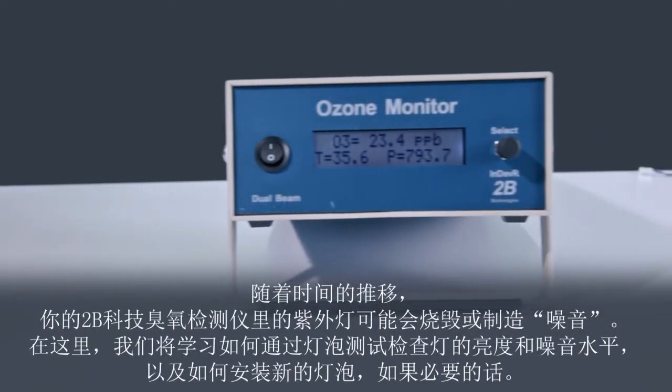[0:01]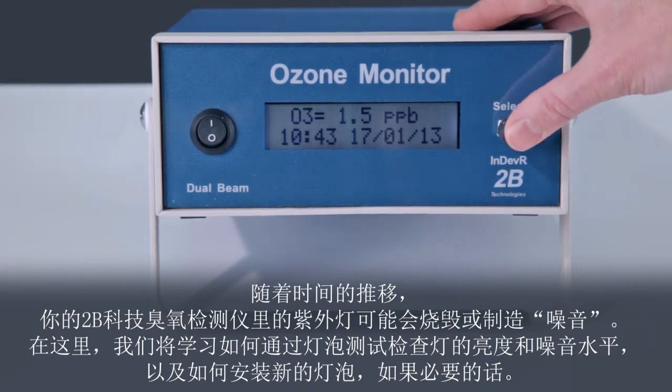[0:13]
Over time, the UV lamp in your 2BTEC ozone monitor may either burn out or become noisy. Here, we will learn how to run the lamp test to check the lamp intensity and noise level, and how to install a new lamp if necessary.
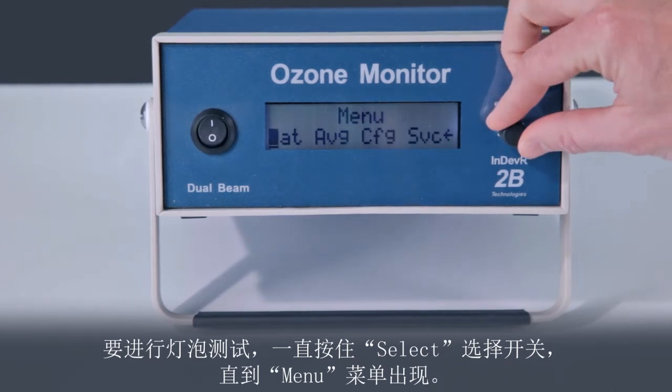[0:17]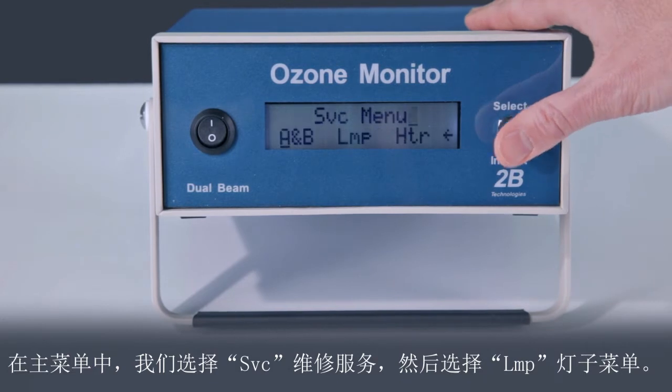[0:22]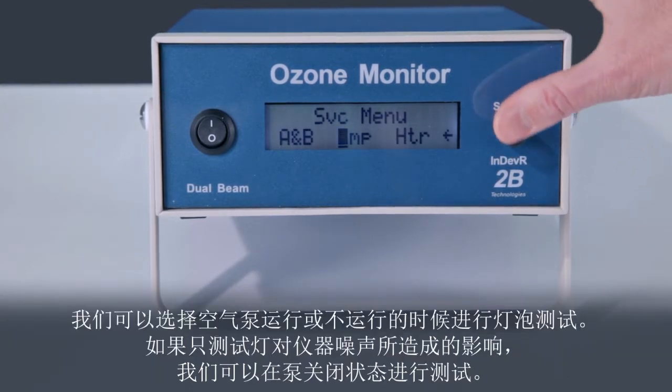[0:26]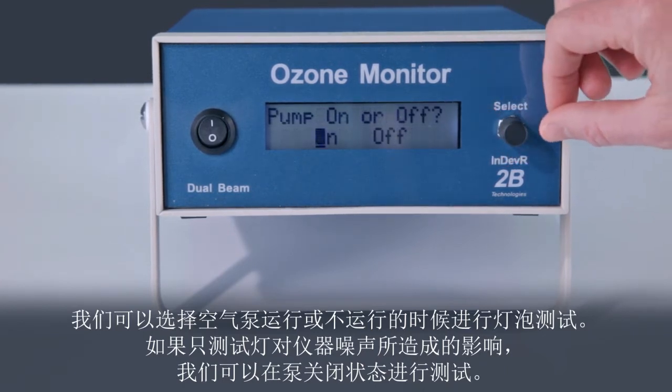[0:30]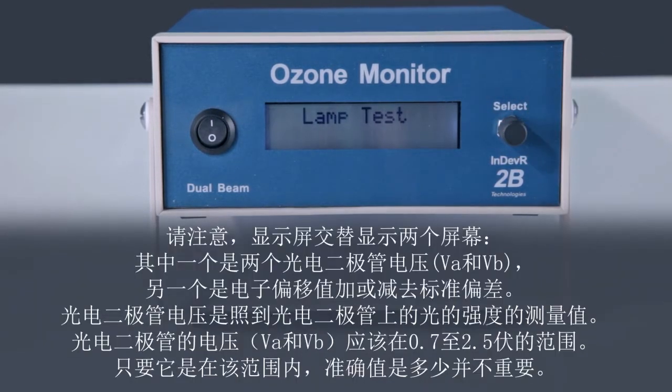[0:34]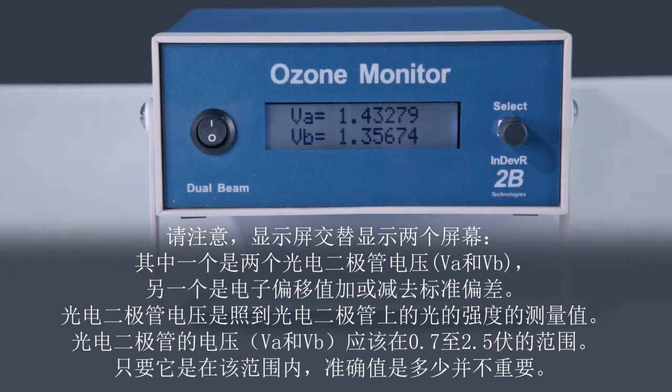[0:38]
To run the lamp test, hold the select switch until the menu appears. In the main menu, we first select the service, then the lamp submenu. We can run the lamp test with or without the air pump running. To test only the effect of the lamp on the instrument noise, we will run the test with the pump powered off. Notice that the display alternates between two screens, one showing the two photodiode voltages and another showing the electronic offset plus or minus the lamp standard deviation.
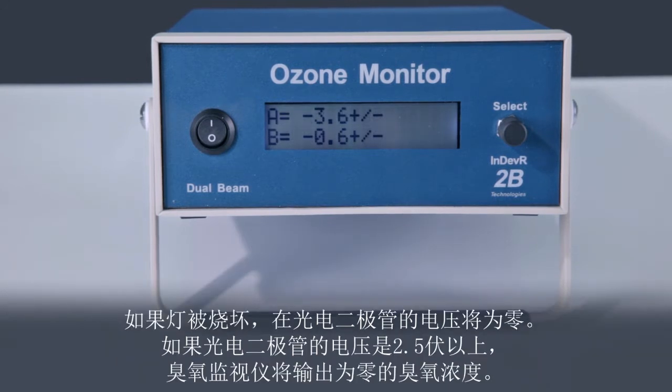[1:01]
The photodiode voltages are a measure of the light intensity striking the photodiodes. The photodiode voltages, V sub A and V sub B, should be in the range of 0.7 to 2.5 volts. The exact values are unimportant, as long as they are in this range. If the lamp is burned out, the photodiode voltages will be zero. If the photodiode voltages are above 2.5 volts, the ozone monitor will output zero for the ozone concentration.
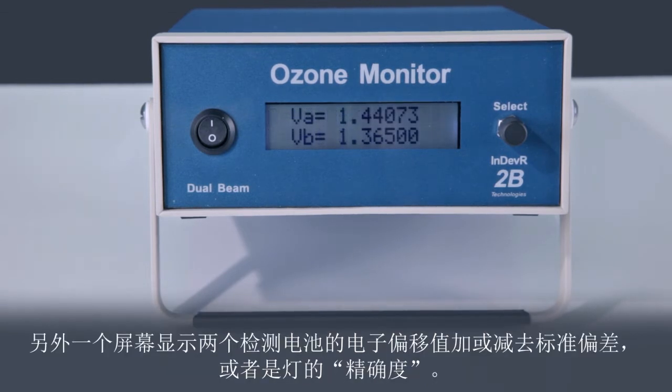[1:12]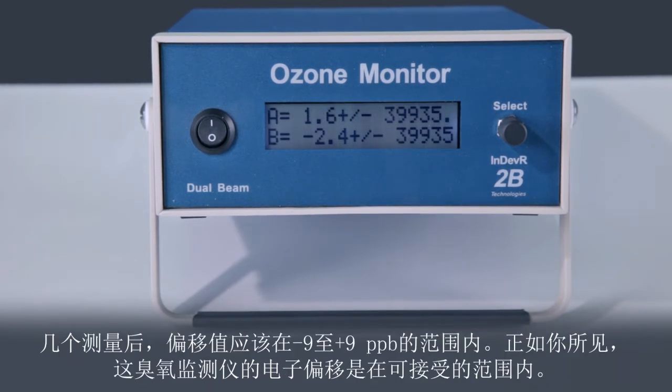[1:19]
The other screen shows the electronic offsets of the two detection cells plus or minus the standard deviations or precisions of the lamp. After a few measurements, the offsets should be in the range of negative 9 to plus 9 ppb. As you can see, the electronic offsets for this ozone monitor are well within the acceptable range.
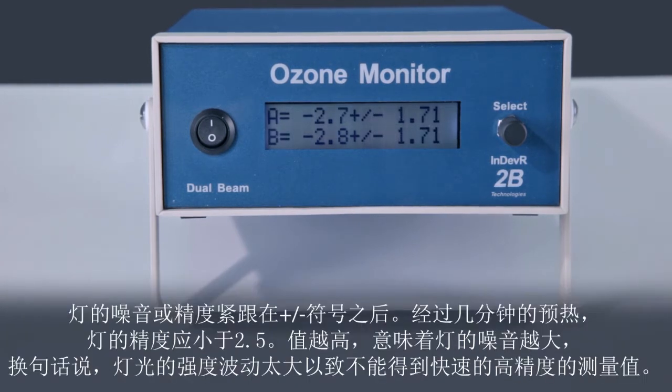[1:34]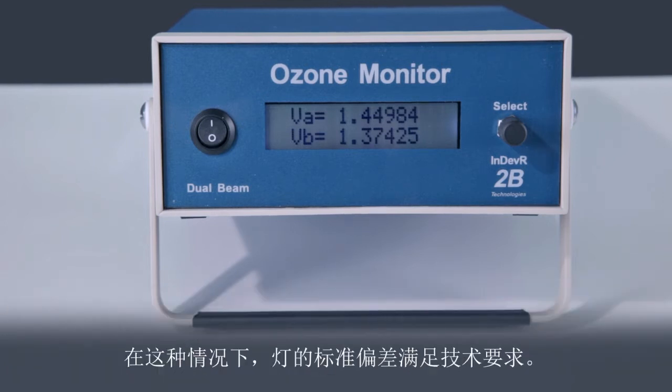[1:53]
The noise or precision of the lamp follows the plus/minus symbols. After a few minutes of warm-up, the lamp precisions should be less than 2.5. A higher value implies a noisy lamp. In other words, the intensity of the lamp is fluctuating too much to make fast measurements with high precision. In this case, the lamp standard deviations meet specification.
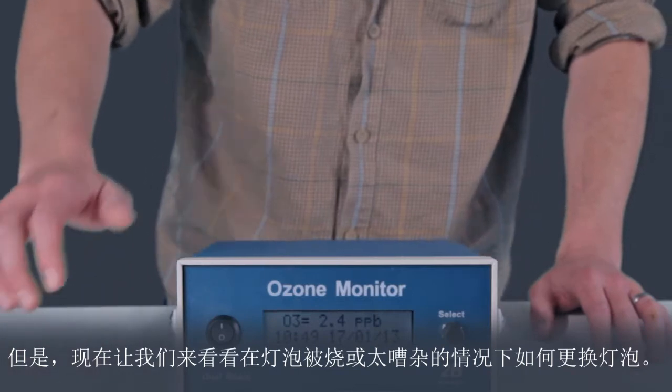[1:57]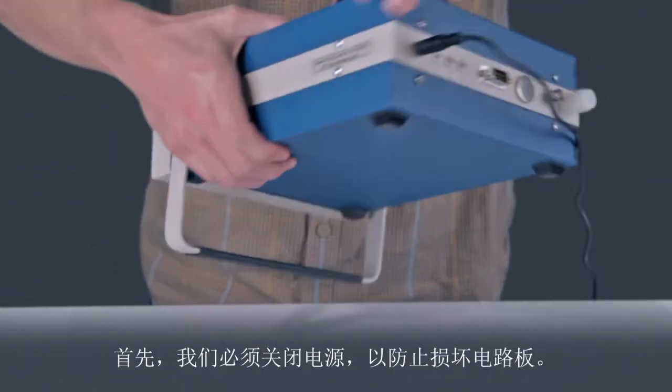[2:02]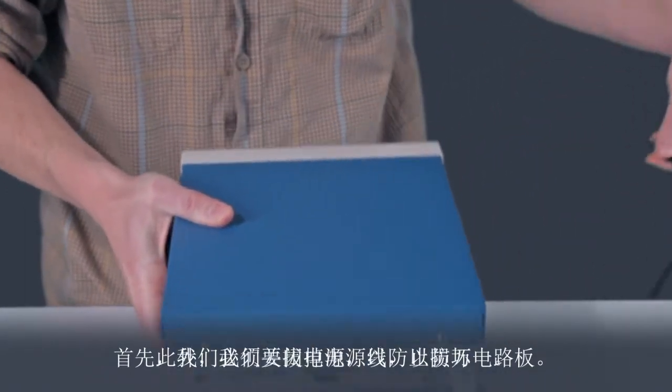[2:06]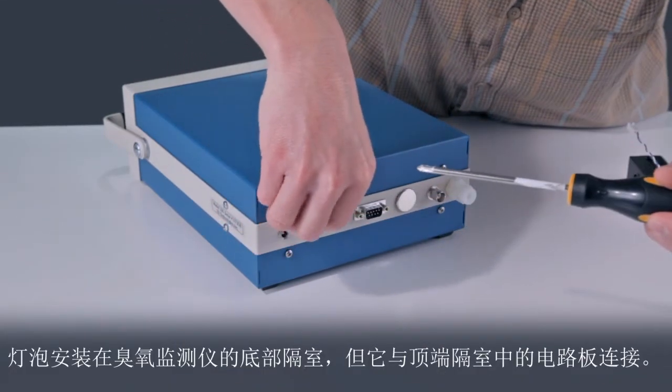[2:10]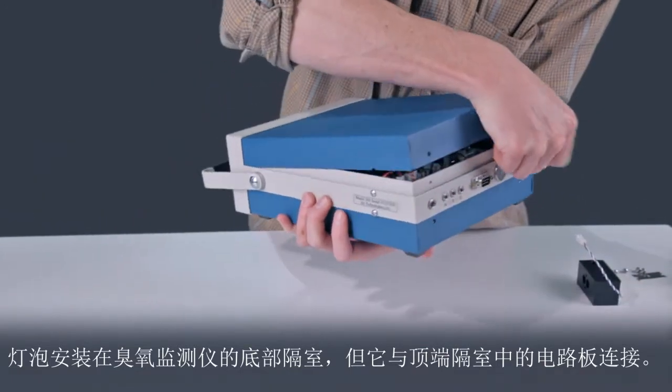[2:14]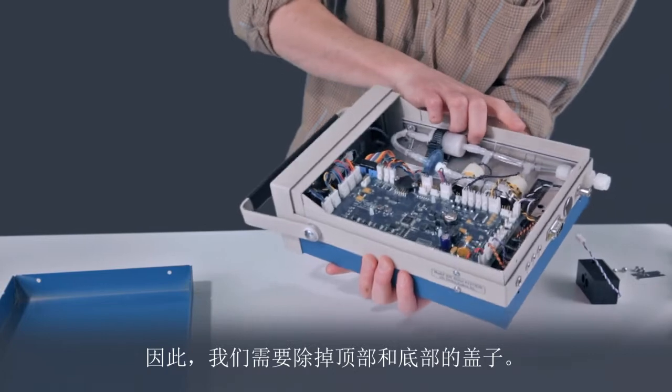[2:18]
But let's see how to change a lamp in the case that the lamp is burned out or is too noisy. First, we should turn off the power to prevent damage to the circuit board. And we will unplug the power cable as a precaution. The lamp is mounted in the bottom compartment of the ozone monitor, but it connects to the circuit board in the top compartment. So, we will need to remove both top and bottom covers.
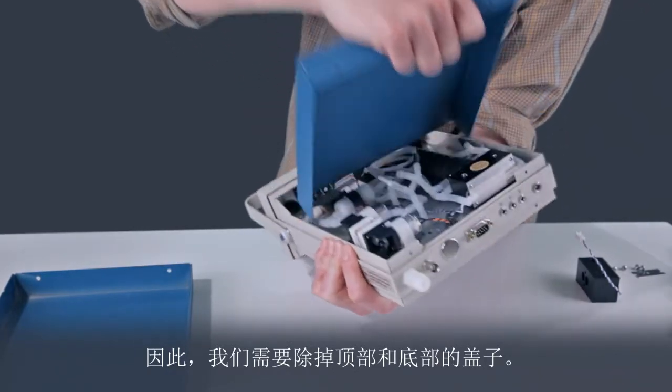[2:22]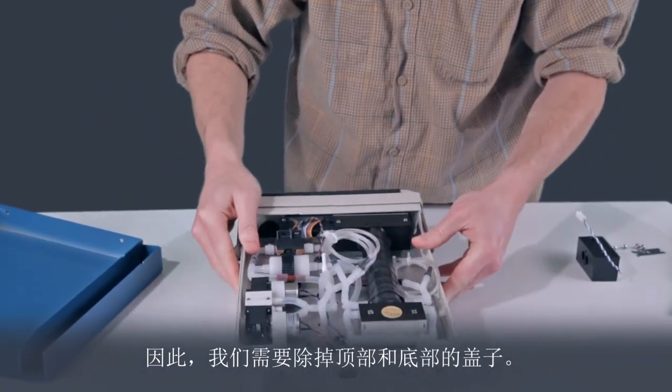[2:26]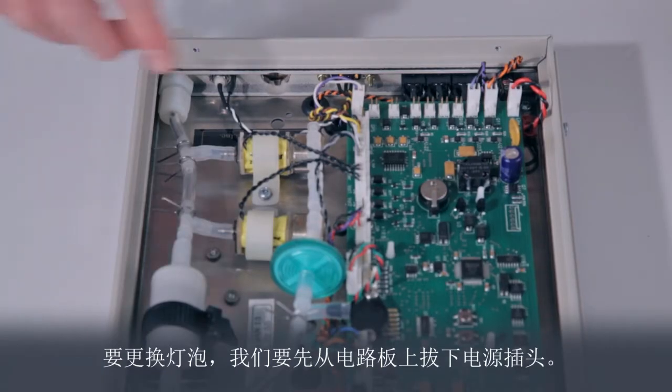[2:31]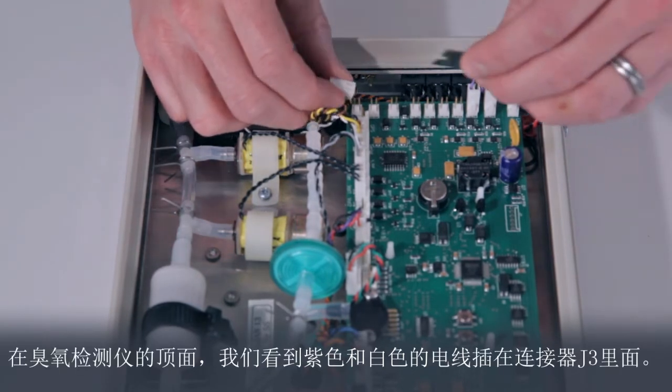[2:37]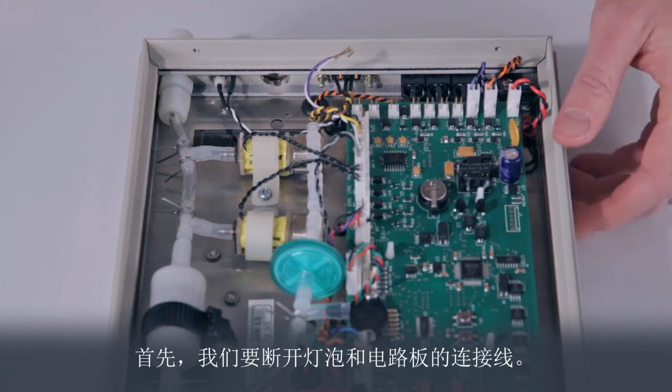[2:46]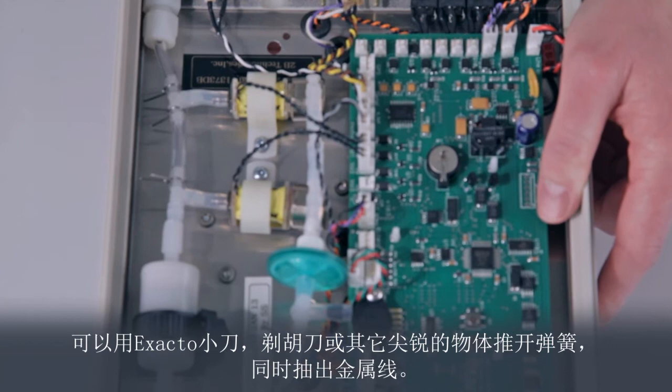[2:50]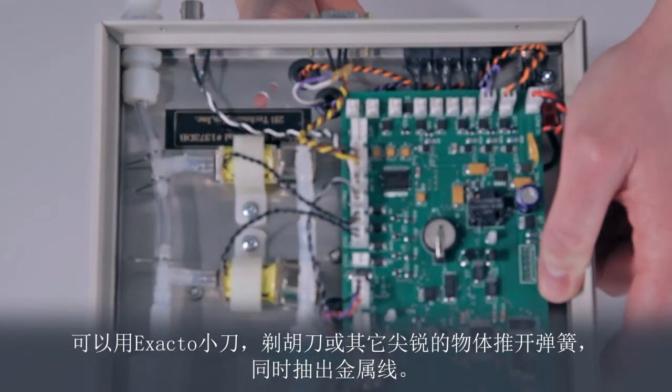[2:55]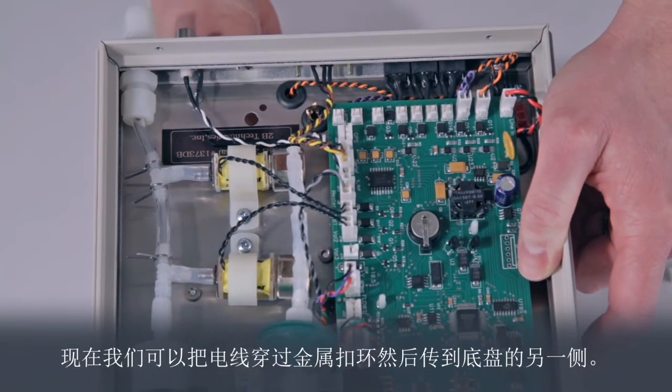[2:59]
To change the lamp, we will first unplug it from the circuit board. Note that the lamp has purple and white wires. On the top side of the ozone monitor, we see the purple and white wires are plugged into connector J3. To begin, we will unplug the lamp from the circuit board. Next, we need to remove the wires from the connector. Done with an X-Acto knife, razor blade, or other sharp object by pushing in the spring clip while withdrawing the wire. Now, we can slide the wires through the grommet that passes the wires to the other side of the base plate.
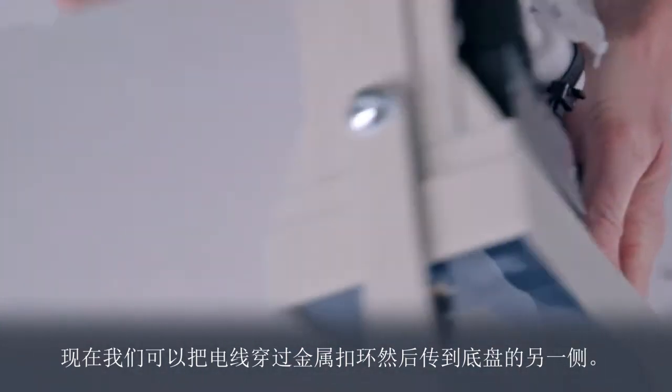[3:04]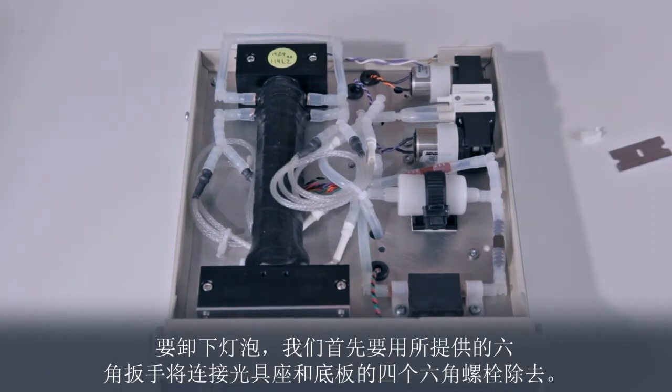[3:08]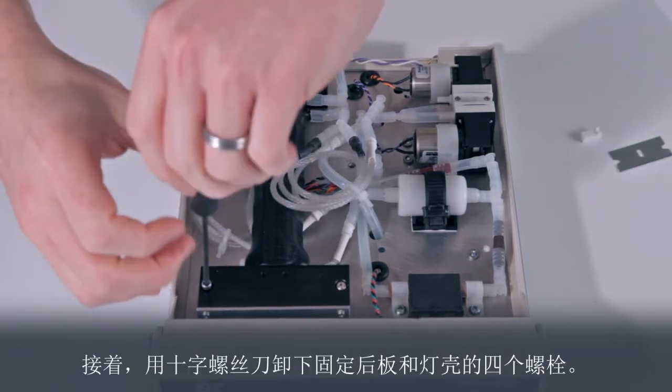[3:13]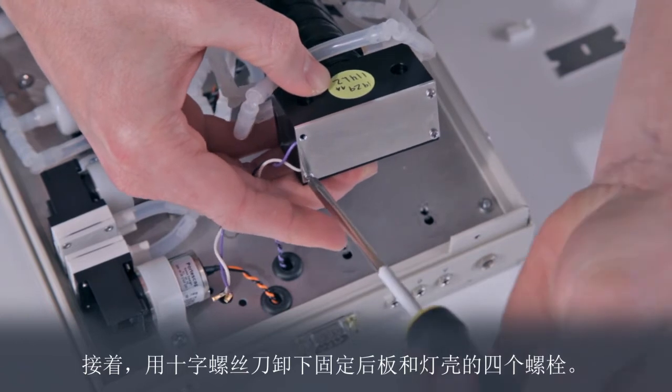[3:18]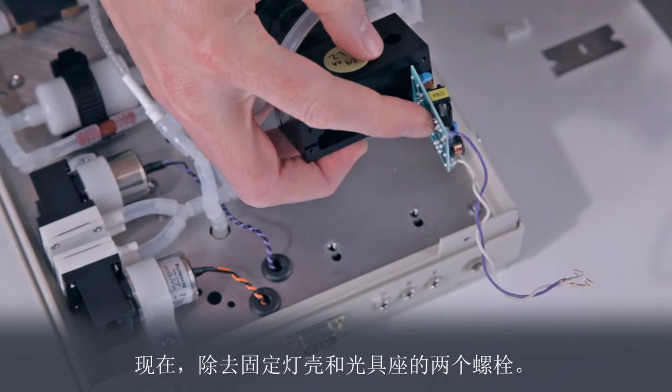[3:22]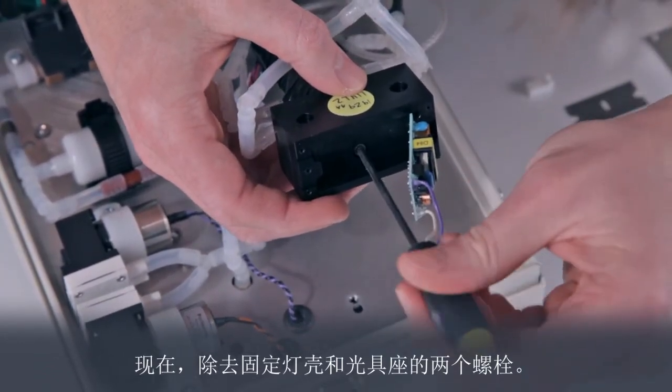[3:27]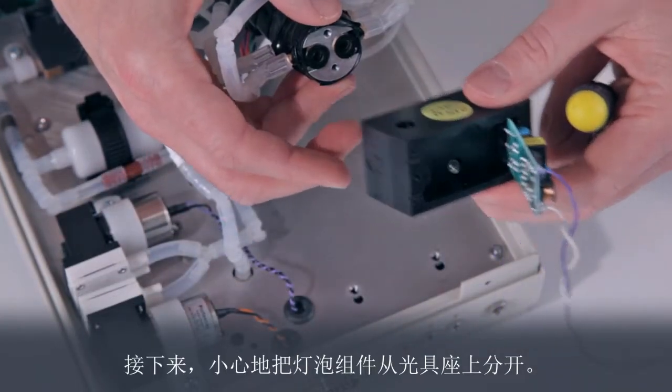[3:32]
To remove the lamp, we first remove the four hex bolts that attach the optical bench to the base plate using the hex wrench provided with the ozone monitor. Now, using a Phillips screwdriver, remove the four bolts that hold the back plates to the lamp housing. Now, remove the two bolts that hold the lamp housing to the optical bench. Next, carefully separate the lamp assembly from the optical bench.
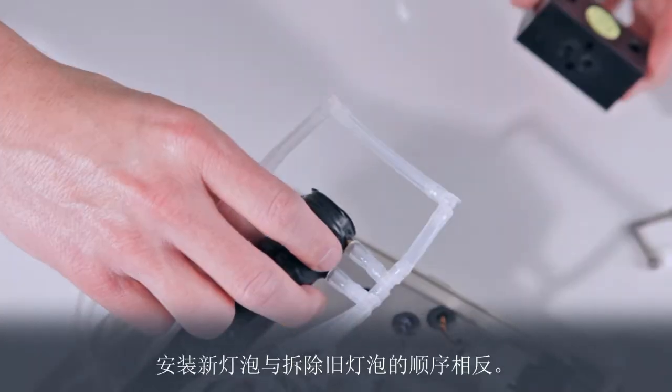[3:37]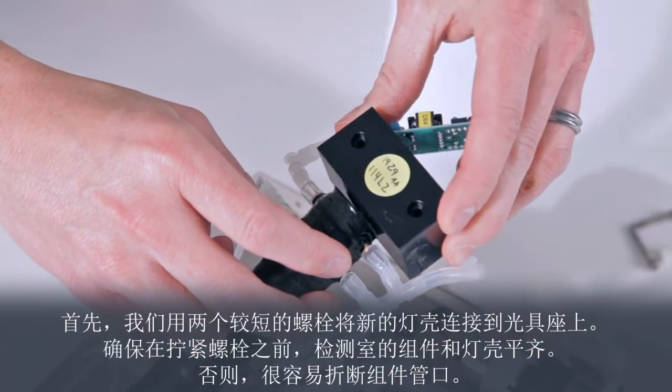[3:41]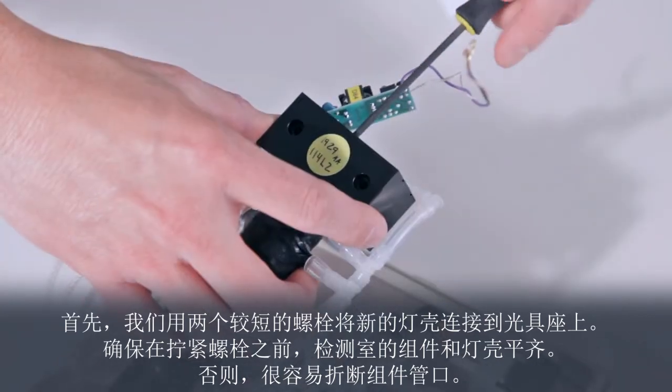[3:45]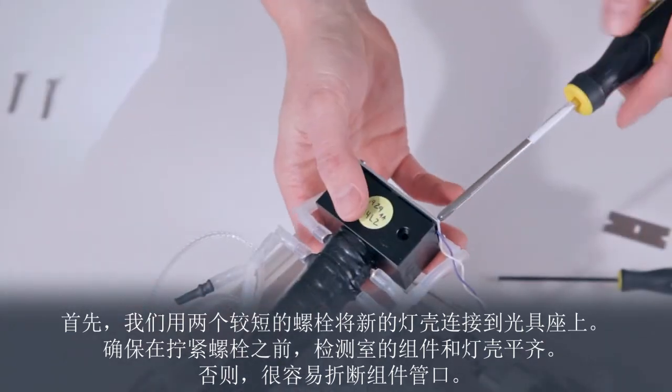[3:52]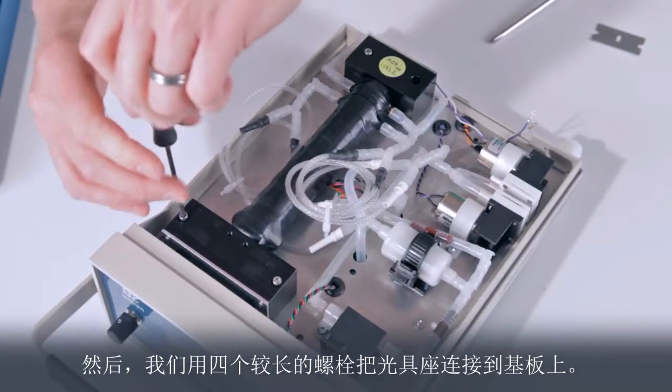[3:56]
We just reversed the process to install the new lamp. First, we attach the new lamp housing to the optical bench using the two shorter bolts. Make sure the detection cell assembly is flush with the lamp housing before tightening the bolts. Otherwise, it is easy to snap off a cell window. We then attach the optical bench to the base plate using the four longer bolts.
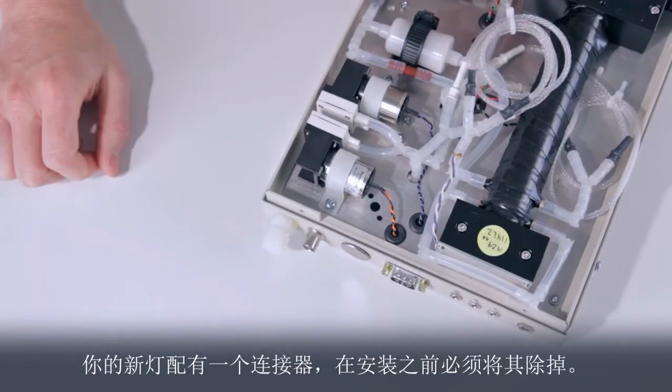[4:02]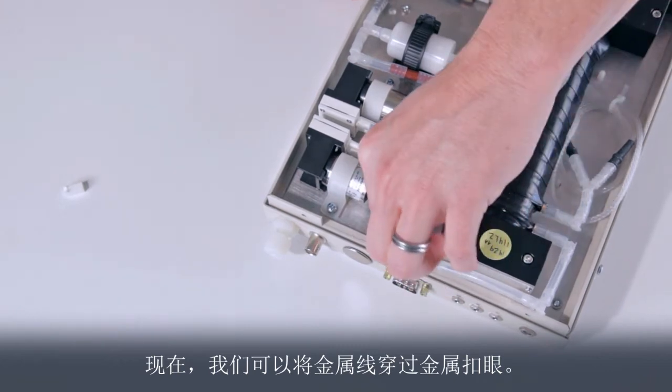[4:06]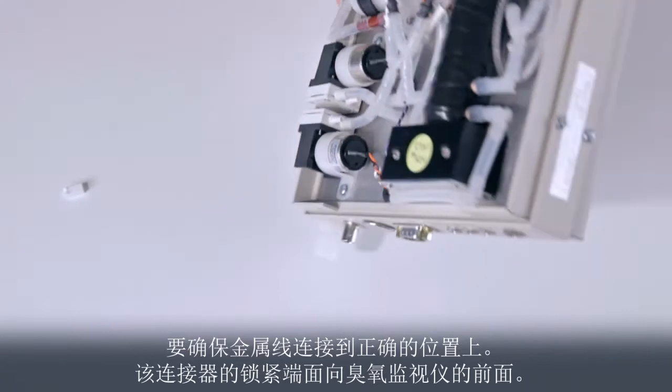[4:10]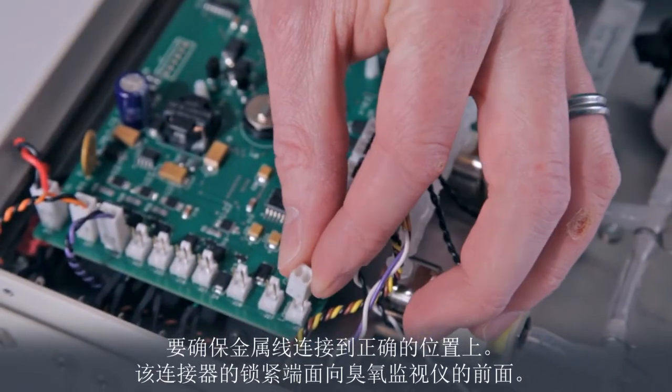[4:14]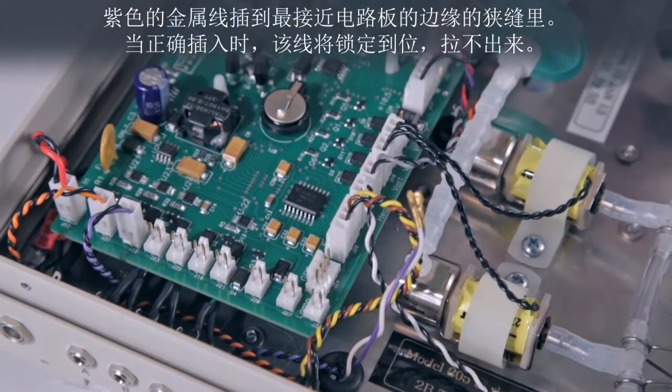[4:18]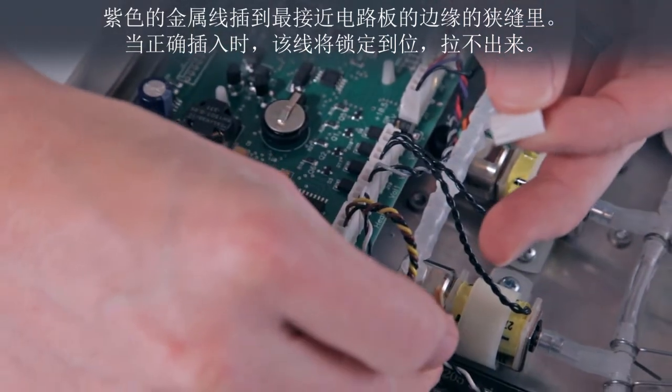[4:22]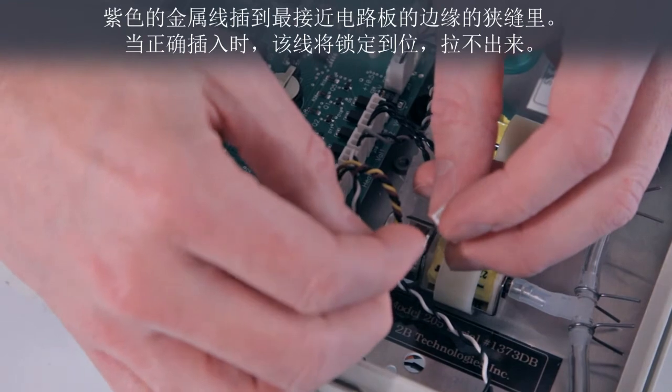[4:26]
Your new lamp will come with a connector which must be removed. Now we can pass the wires through the grommet. Be sure to connect the wires into the correct positions of the connector. The locking end of the connector faces the front of the ozone monitor. The purple wire inserts into the slot nearest the edge of the circuit board. When inserted correctly, the wire will lock into place and will not pull out.
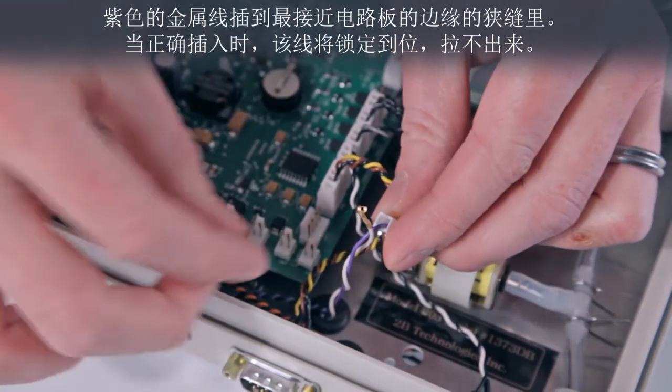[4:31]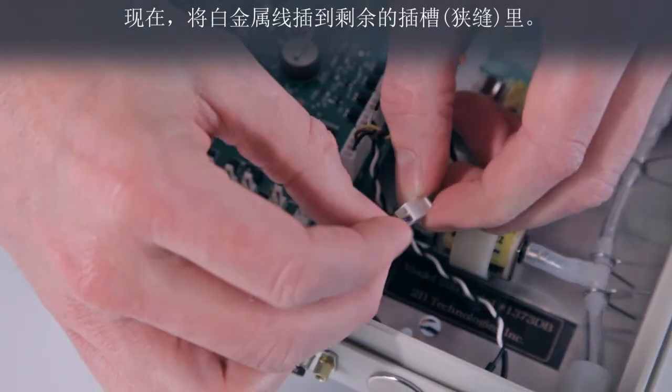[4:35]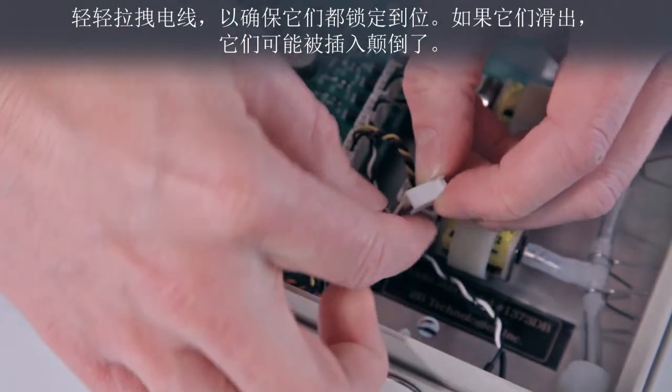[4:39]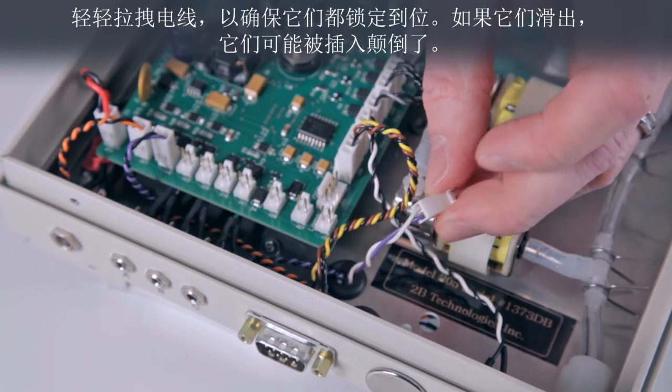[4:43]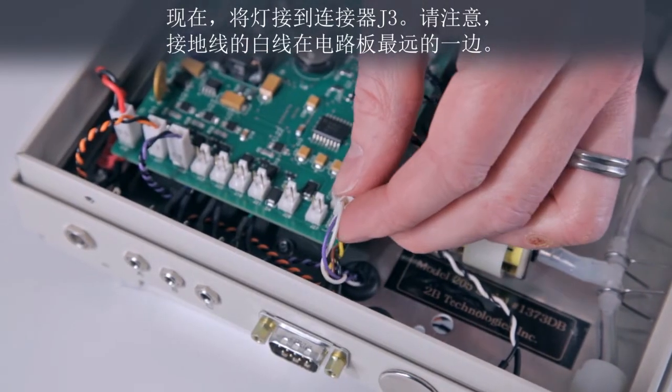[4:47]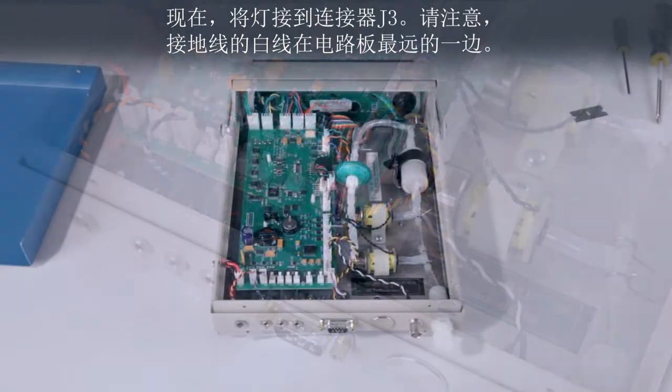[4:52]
Now, insert the white wire into the remaining slot. Gently tug on the wires to make sure they are both locked in place. If they slide out, they probably were inserted upside down. Now plug the lamp into connector J3. Notice that the white wire, which is the ground wire, is furthest from the edge of the circuit board. We may now replace the top and bottom covers.
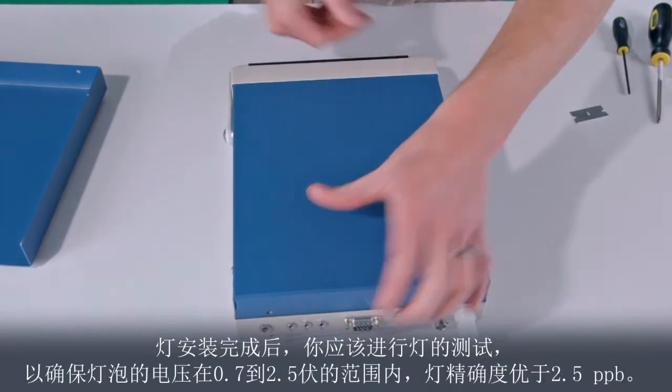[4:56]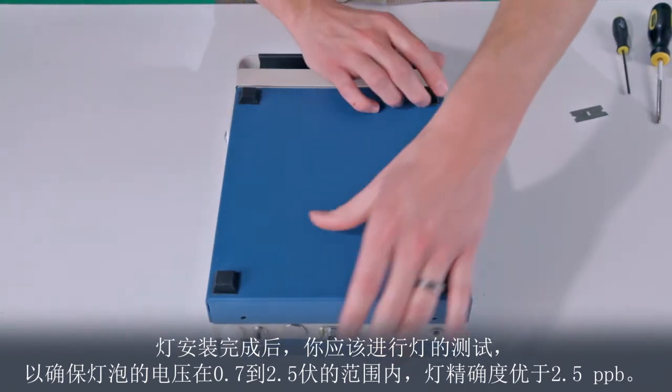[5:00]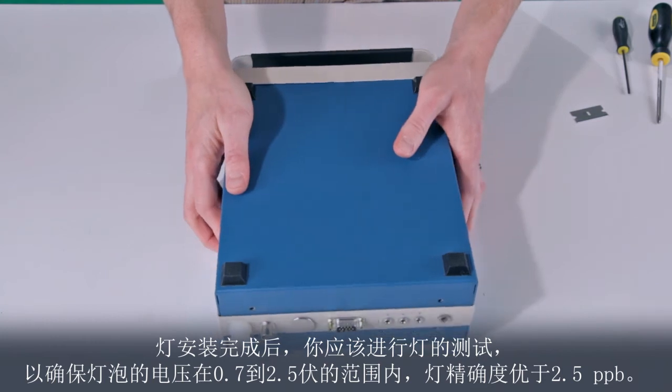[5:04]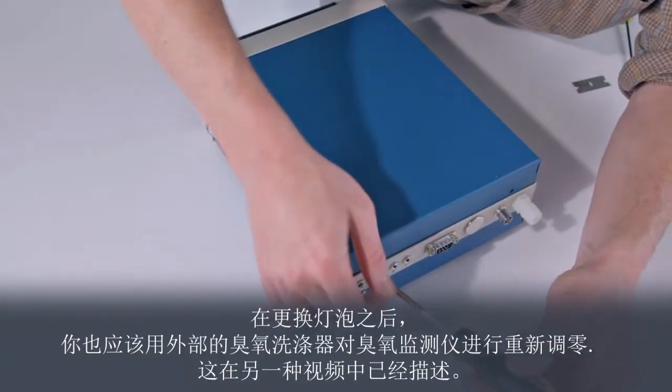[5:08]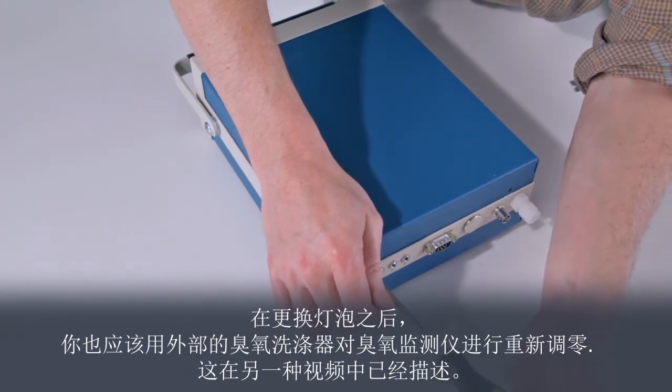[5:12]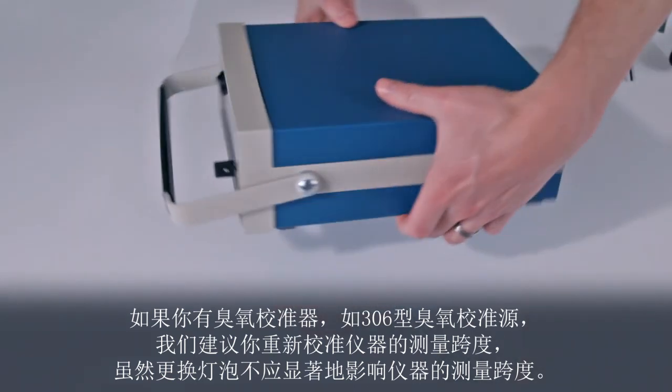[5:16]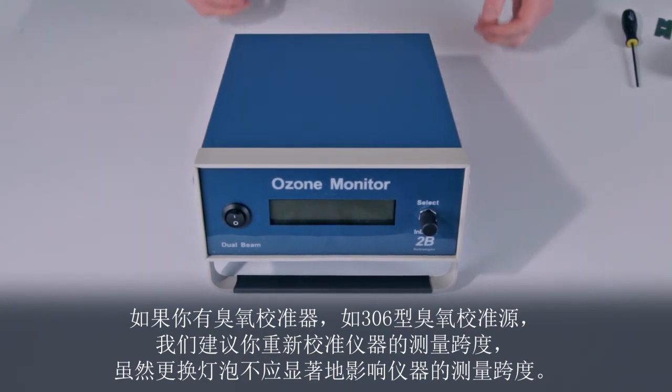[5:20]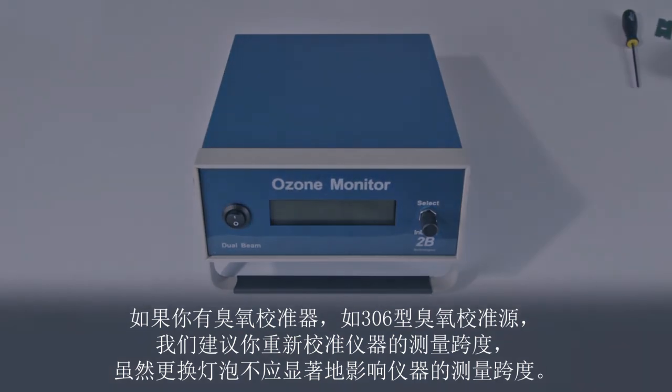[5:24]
After completing the lamp installation, you should run the lamp test again to make sure the lamp voltage falls in the range 0.7 to 2.5 volts, and the lamp precision is better than 2.5 ppb. After changing the lamp, you should also re-zero the ozone monitor using the external ozone scrubber as described in another video. If you have an ozone calibrator, such as the Model 306 ozone calibration source, it is also a good idea to recalibrate the instrument span, although the span should not be significantly affected by the lamp change.